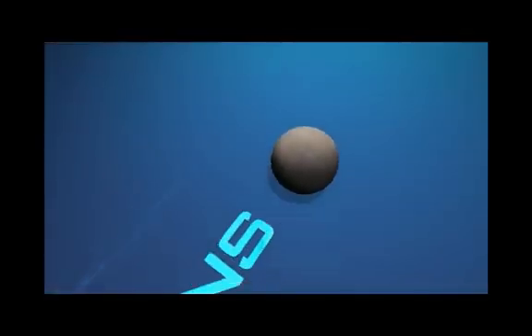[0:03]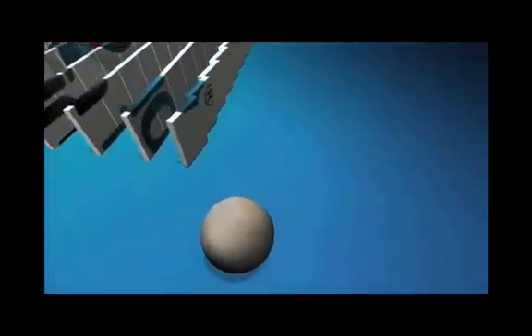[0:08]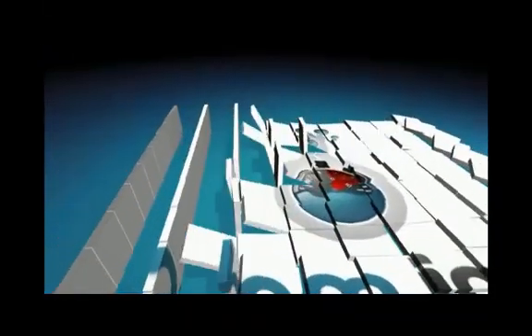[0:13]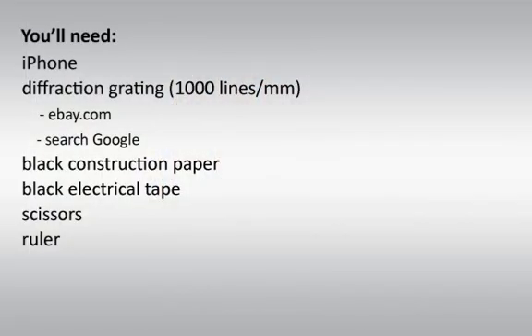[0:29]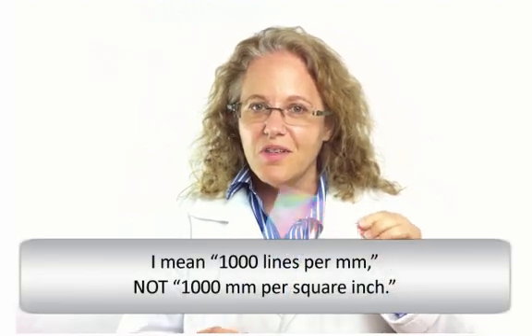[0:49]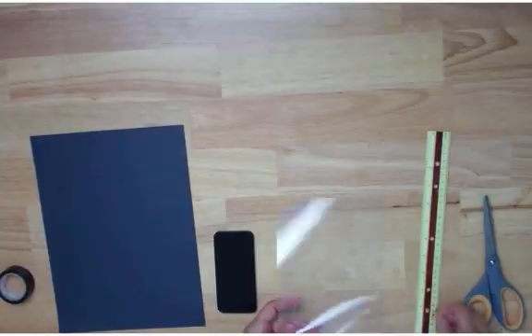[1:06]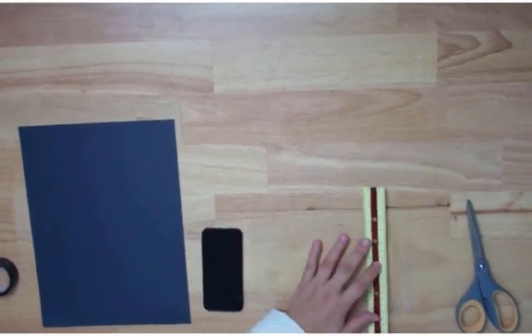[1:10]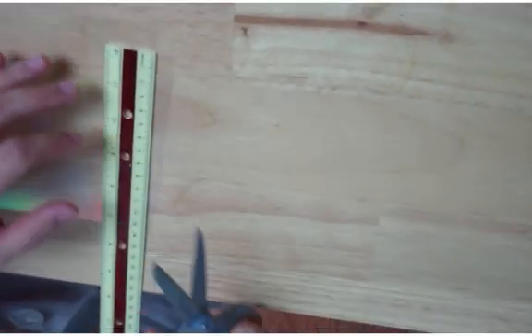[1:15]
You want to first cut out a 1 centimeter by 1 centimeter square of your diffraction grating. I'm going to approximate this. This doesn't have to be exact. What you want to do is be able to cover the lens of your iPhone.
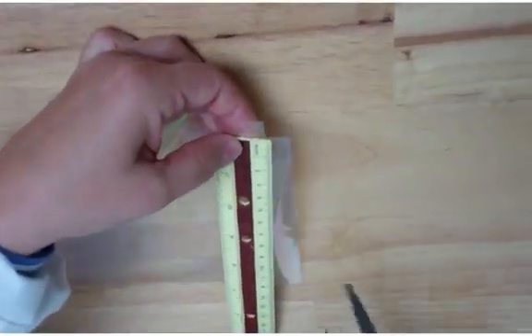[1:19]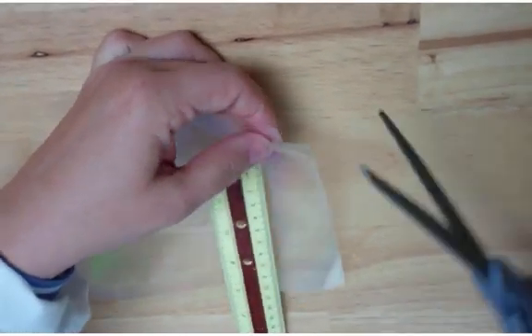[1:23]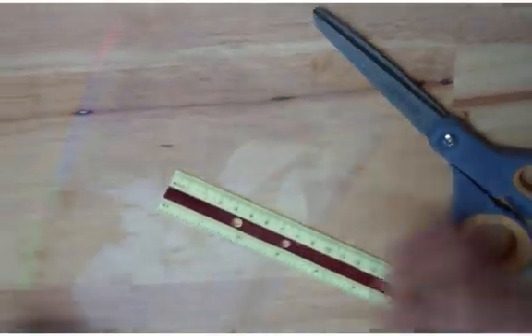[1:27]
Before I forget, what's the purpose of the iPhone is you need to download the app SpectraSnapp, which is going to be able to interpret the light that goes into the iPhone as a spectra.
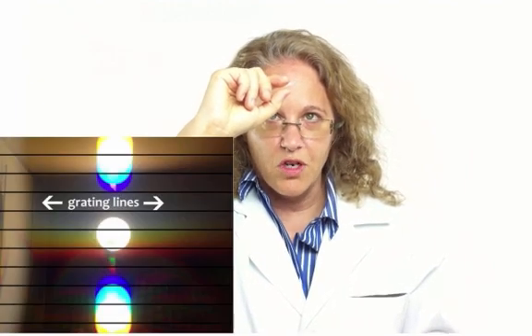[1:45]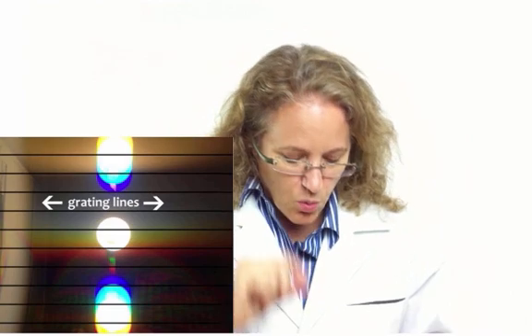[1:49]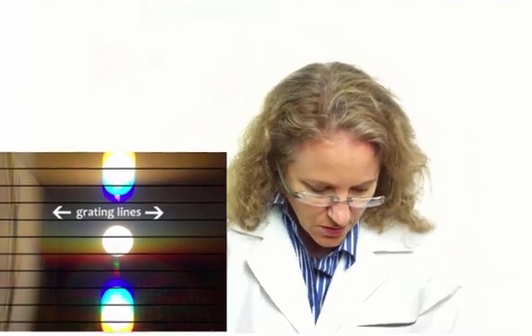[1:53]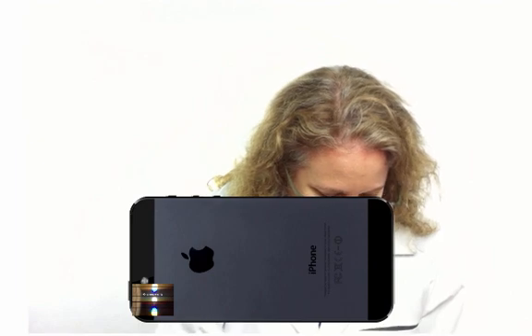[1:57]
So you want to cut out your centimeter, and you want to hold it up to the light and see the direction of the rainbow. The direction of the rainbow is going to be perpendicular to the lines of the diffraction grating. And you want to line up the lines of the diffraction grating with the horizontal part of the phone. So let's do that.
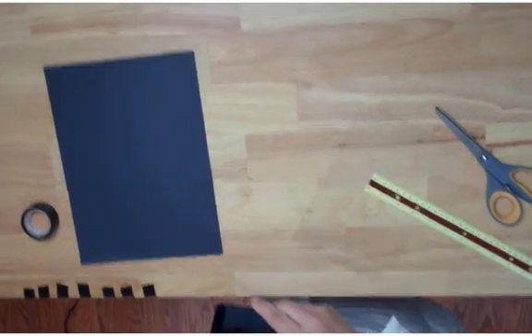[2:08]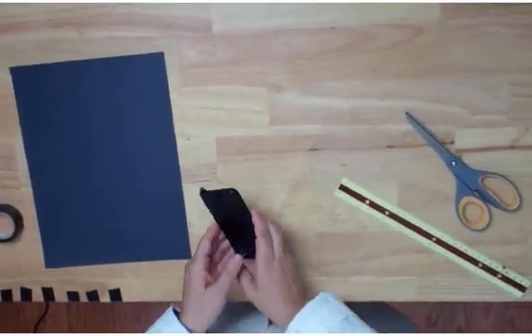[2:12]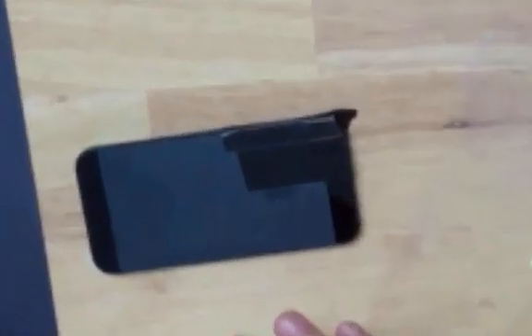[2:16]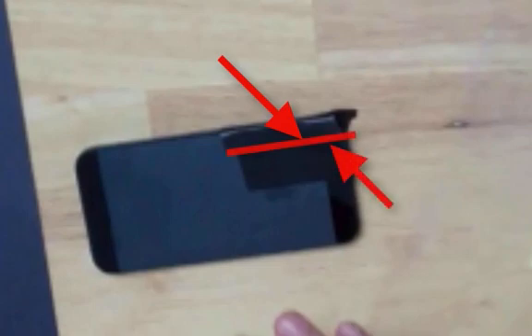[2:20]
And we are going to tape that down with 2 small pieces of black electrical tape so that only a tiny slit appears, because you want to minimize the amount of light coming into it. So here I have a tiny slit in which the light can enter the iPhone.
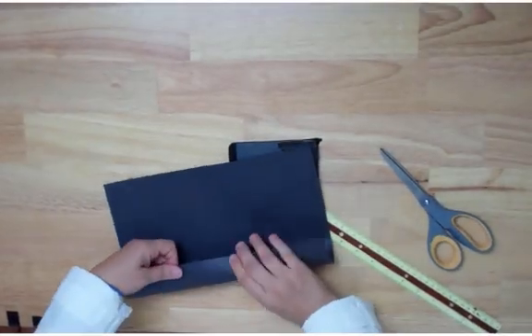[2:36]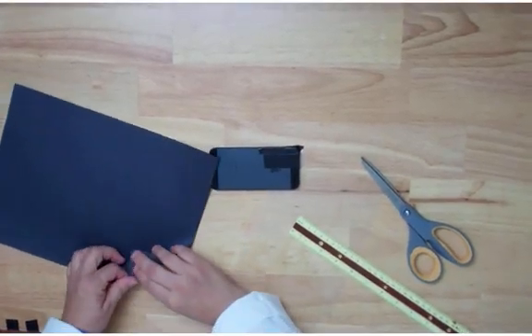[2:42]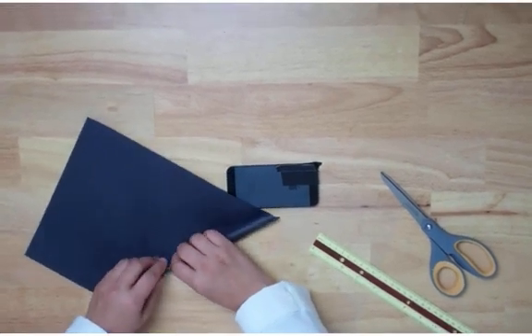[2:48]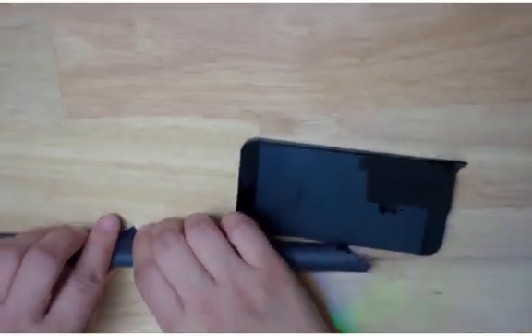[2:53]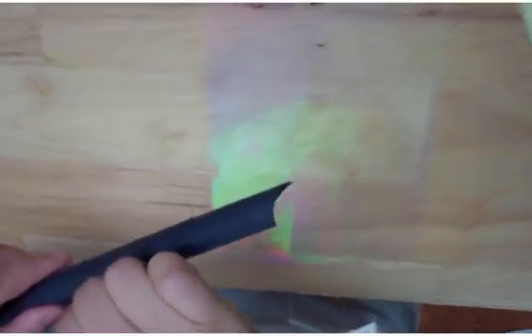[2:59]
Now I need to make a tube to further block out any ambient light. They have directions how to do this on the SpectraSnapp app, but they ask you to roll the construction paper like this, which I found very difficult. So what I do is I take it from the corner and just roll a tube. We roll up the construction paper from one corner, and once it's all rolled up, we're going to tape it down so it doesn't unfurl.
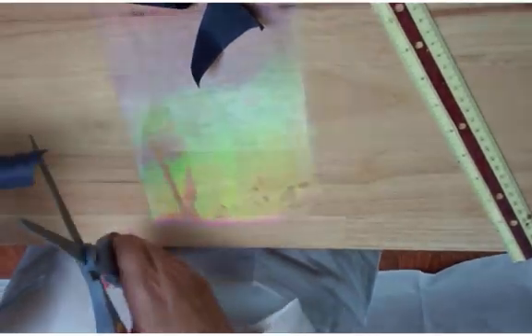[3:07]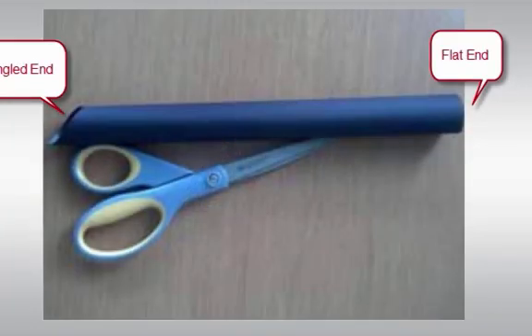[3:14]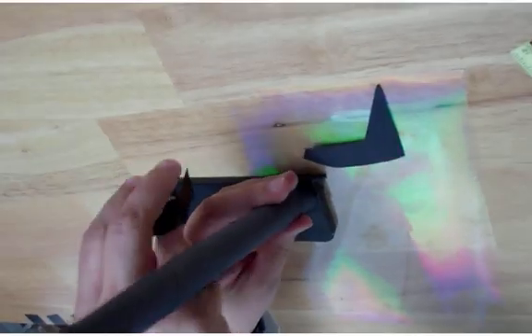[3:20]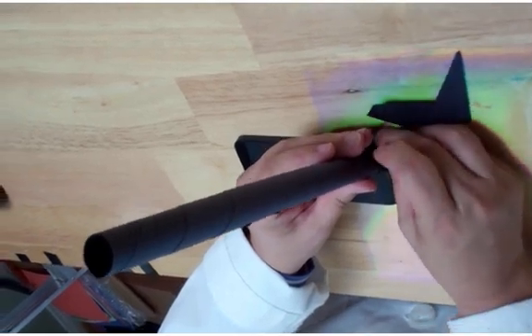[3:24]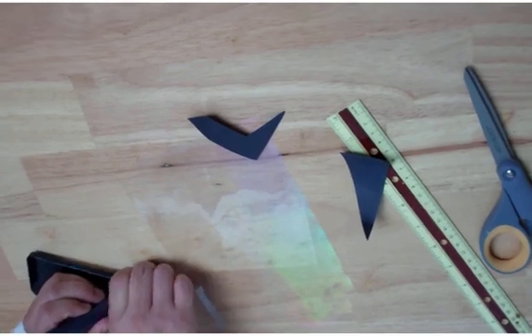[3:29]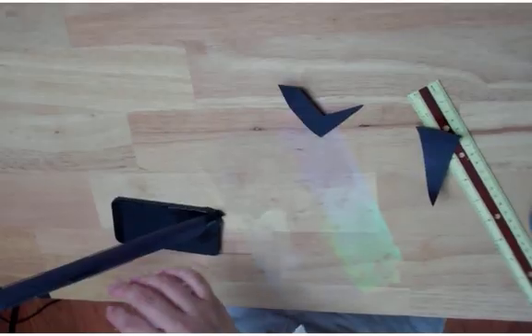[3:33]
Then what I want to do is I want to snip the ends so that they're horizontal. Actually, one end is going to be horizontal, and the other one is going to be more diagonal. The diagonal end is going to attach to the iPhone so that it's sticking up. You want it sticking up like this. And so I'm going to seal that to the iPhone
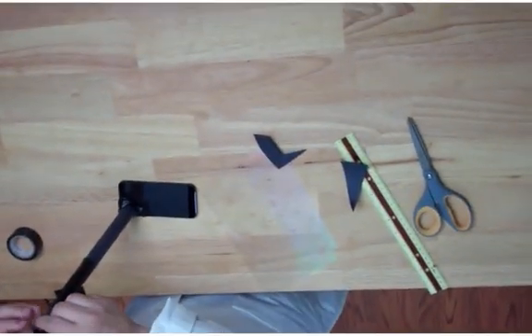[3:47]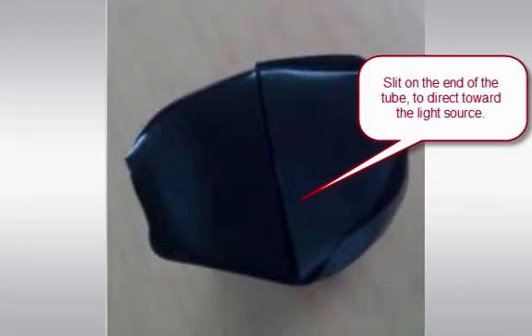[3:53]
so that no ambient light is coming in where it's connected to the iPhone. Now the last step is you also want to mimic that slit you had at the base of the iPhone, at the lens, at the edge of your tube. So we're going to place 2 more pieces of tape at the end of the tube so only a small slit is showing. And now when you hold it up to the light, you can see the source of light and the spectra it produces. So happy filming.
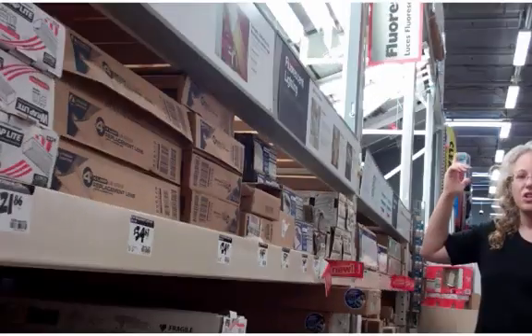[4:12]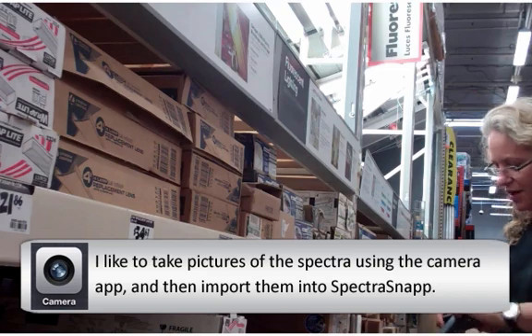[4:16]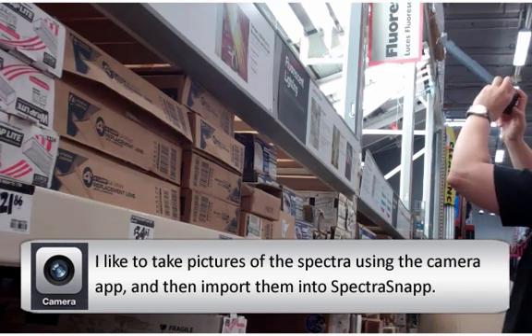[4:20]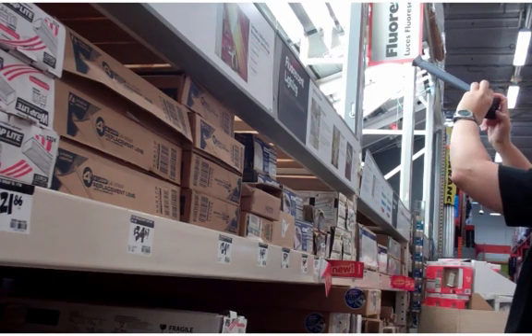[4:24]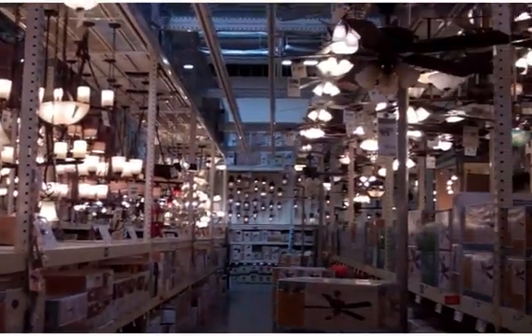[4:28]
Next step, we're going to take this and look at various different types of lights. I say, let's go to Home Depot. So here I am at the fluorescent light section of Home Depot. I'm gonna make sure I found the camera app on my iPhone. I also wanna make sure that the flash is turned off because it's gonna overexpose the picture if the flash is on. How about this section for lights?
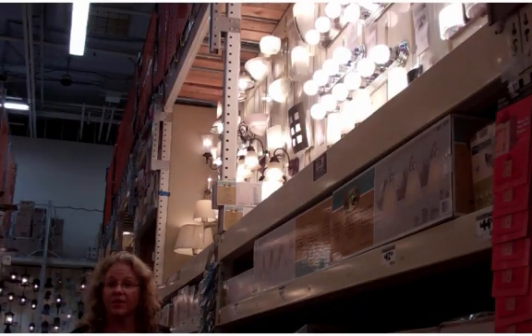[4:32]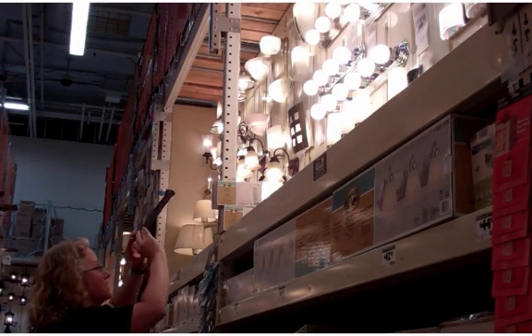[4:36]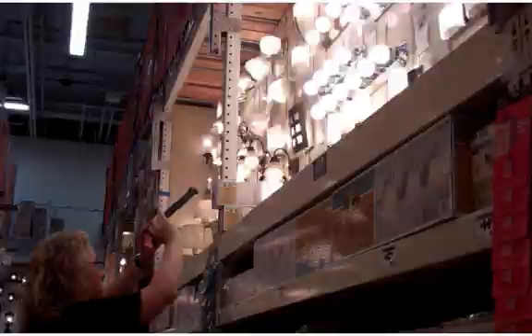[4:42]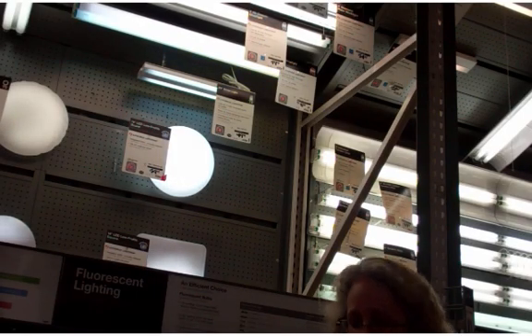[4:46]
I believe these are standard incandescent white light bulbs. Let me take a picture of these. Look for the spectrum in my phone. Here we have LED lights, so let's take a spectrograph of these.
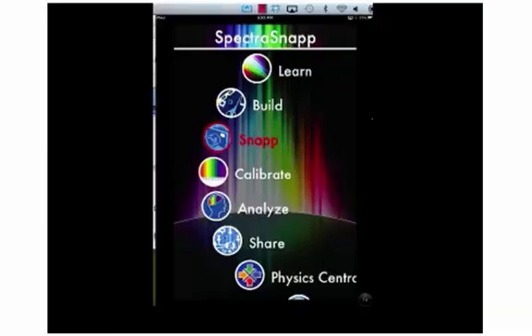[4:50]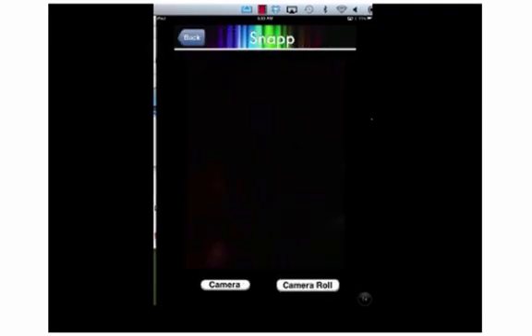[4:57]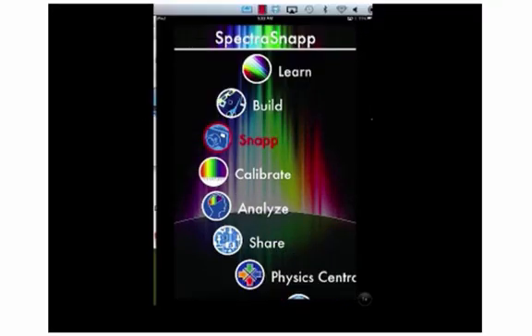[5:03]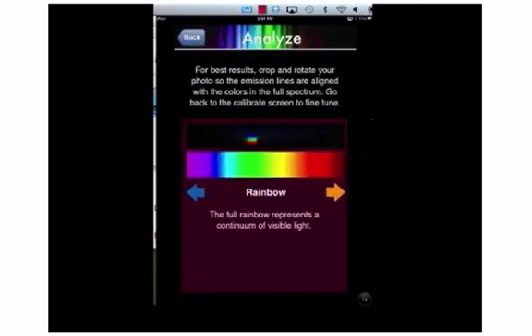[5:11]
Once you've taken your pictures, open up the SpectraSnapp app and select Snap. Once inside Snap, select Camera Roll, and then you can select one of the pictures you've taken. Then go into calibrate, but you really don't know which way to move this picture. So let's get out of calibration and go to analyze.
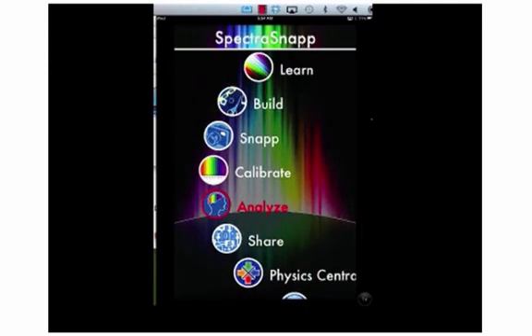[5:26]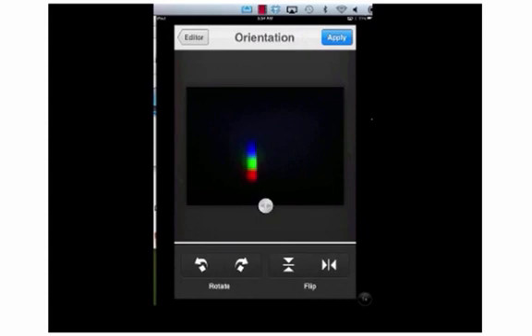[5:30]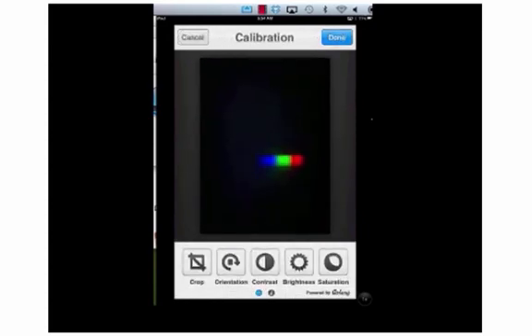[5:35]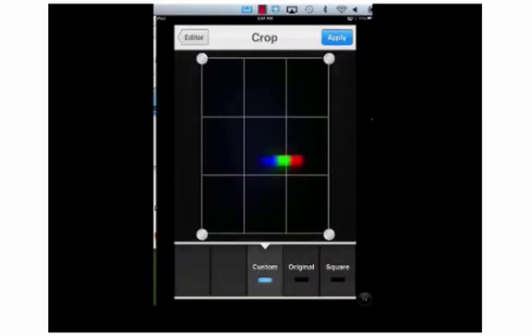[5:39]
Analyze shows us the rainbow from the violet end to the red end. So we know that we want the blue-violet end to be on the left and the red end to be on the right. So now we'll go back to calibrate and we'll align our picture so that the blue end is on the left and the red end is on the right. So we rotated it, and now we also want to crop it so that only our image is visible.
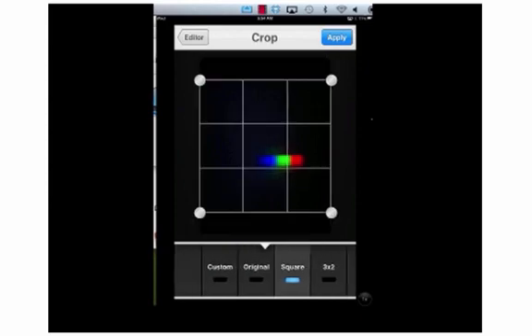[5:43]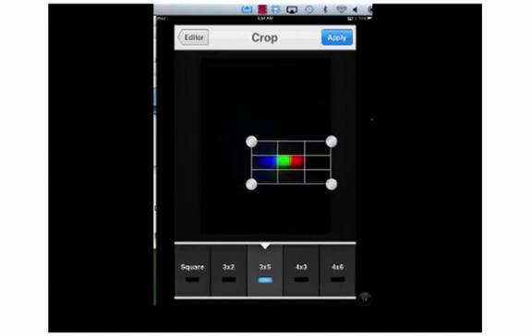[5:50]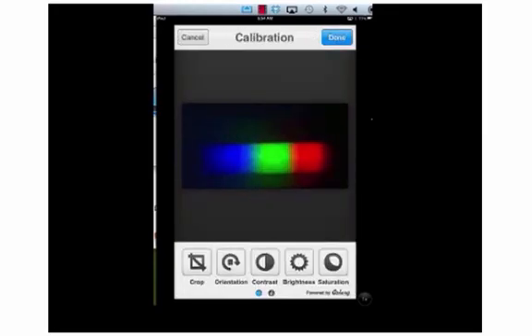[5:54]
So we're going to bring this a little bit closer into the picture. We're going to drag the corners. Actually, I'm going to select the rectangle, the horizontal rectangle, because that's really what this shape is. And I'm going to bring in the corners as close to the picture as I can. And now I have my calibrated picture. Now I can go back to analyze.
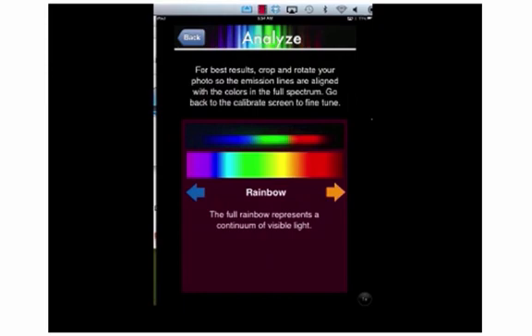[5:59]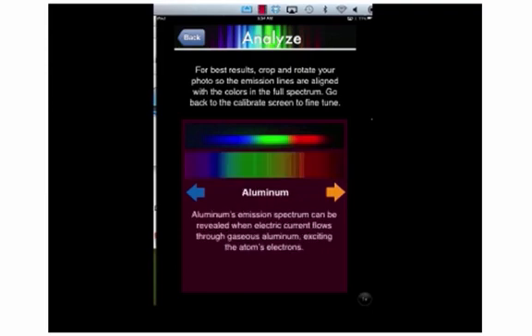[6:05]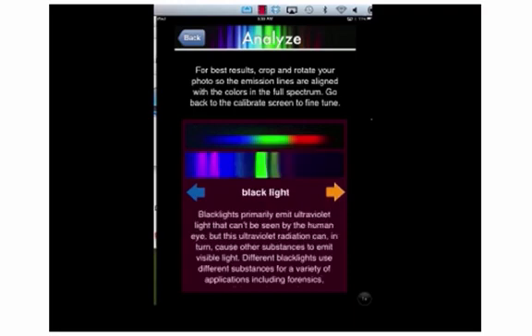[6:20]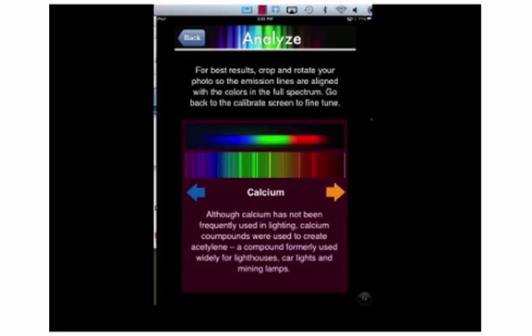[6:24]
And as you can see, on the top is the picture from my camera roll, and on the bottom is a rainbow. And it looks like what I have here is white light because it's a continuous spectrum. But as I go through the selections here, this is aluminum, and you compare the lines of the spectra of the different metals with my light source, you can see that aluminum has spectral lines, whereas our source of light is a continuous spectrum. Look at black light, look at calcium.
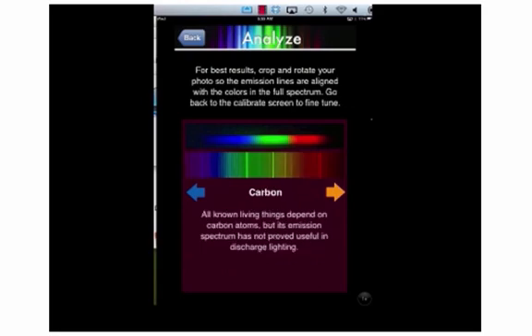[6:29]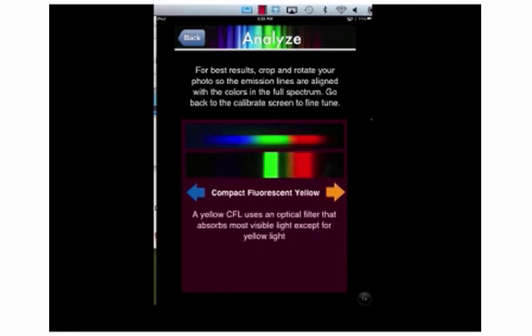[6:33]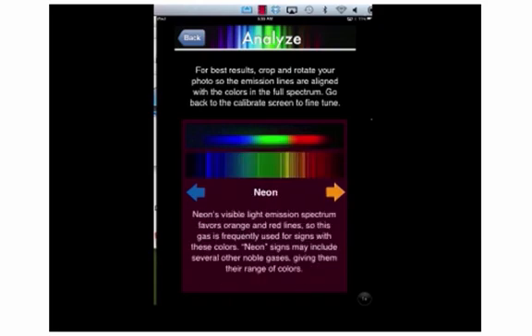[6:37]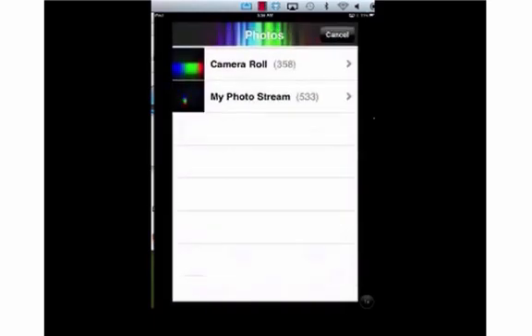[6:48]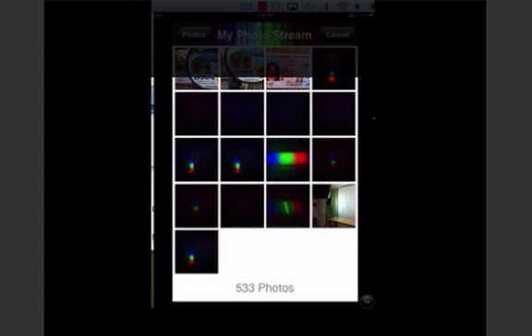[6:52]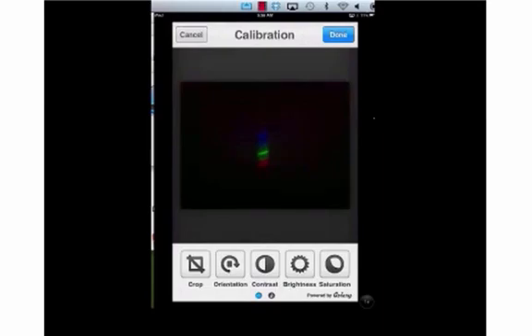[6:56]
Notice the bands. Remember, the bands represent the certain energy amounts that are given off when an electron moves from a higher energy level to a lower energy level. So we can compare our light source, our picture, with all these samples down below in the analyze section. Next, we can take another picture from our camera roll. Let's select a picture from our fluorescent light.
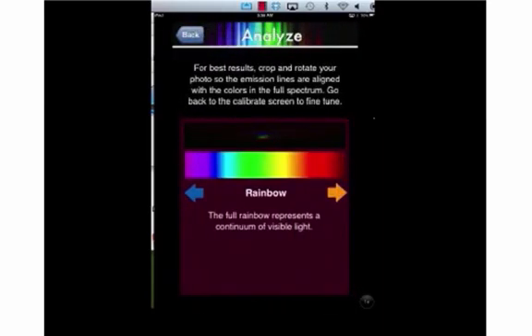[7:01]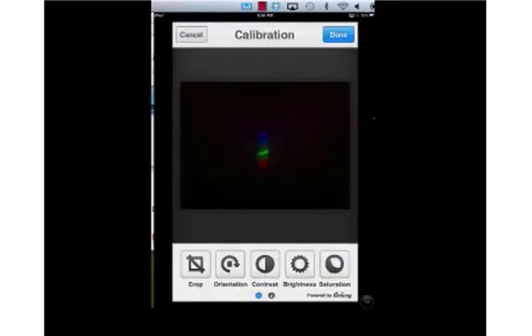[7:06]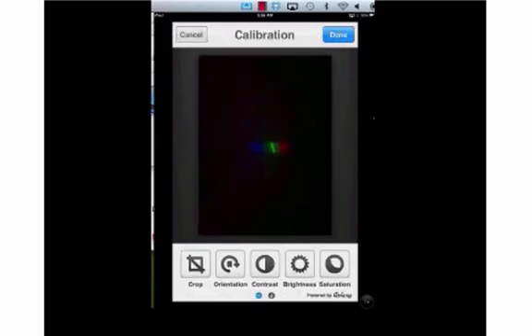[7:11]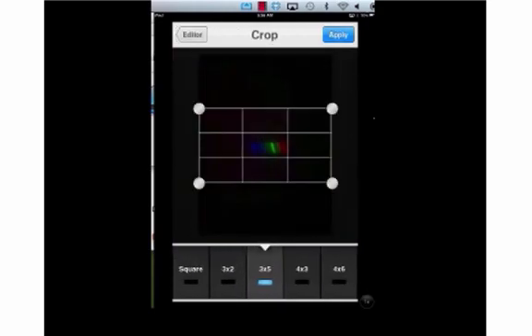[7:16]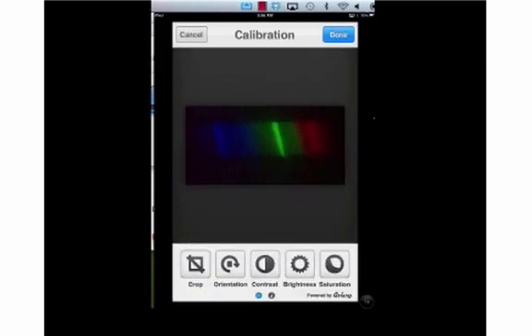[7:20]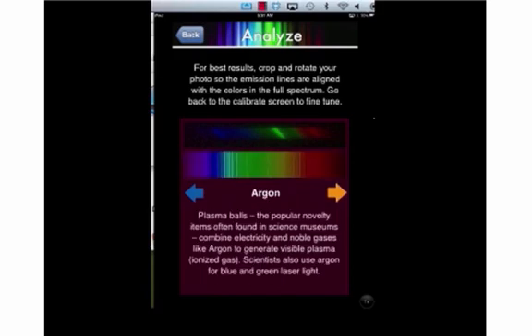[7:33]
And again, remember in the analyze section, we have the violet on the left end, and the red on the right end. So let's go back to calibrate, and we're going to need to turn it to the left so that the blue is on the left and the red is on the right. We're going to crop it, but we're going to select the shape that matches our spectra. So we're going to select a rectangle shape and crop it. And now we can compare our light source, and you can see this is no longer continuous white light. We have specific bands at the blue line, the green line, yellow, and red.
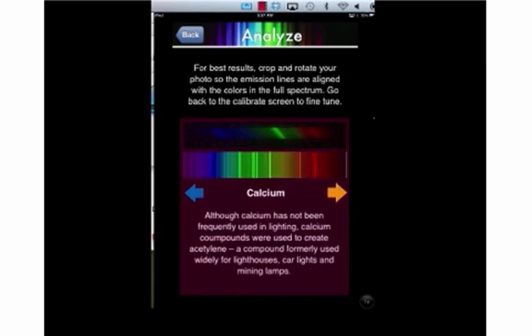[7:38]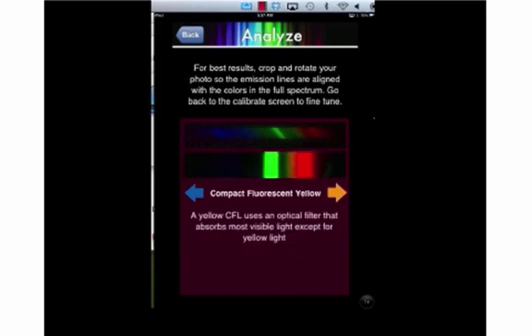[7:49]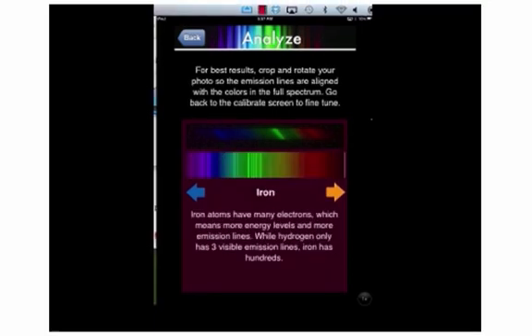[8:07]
Leafing through our samples, we see that our fluorescent light looks just like compact fluorescent white. Notice the blue lines, the green lines, the yellow, and the red. It's definitely compact fluorescent white, and it says here in the description that compact fluorescent white is made of mercury gas and various phosphors. So that's what we have here. So we used the SpectraSnapp app and the samples that they gave us to see what was in our light, which of course must have been mercury vapors and phosphors. And here, look how much it lines up with mercury.
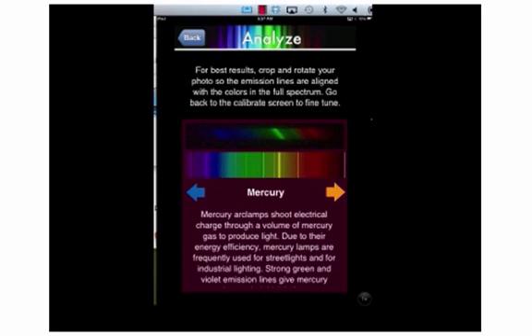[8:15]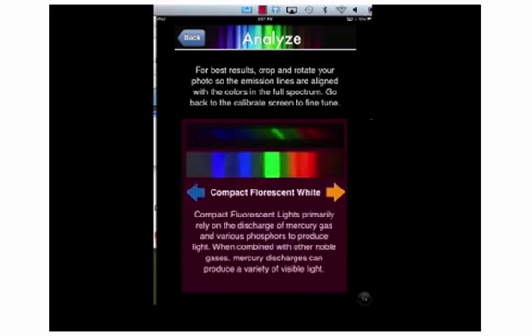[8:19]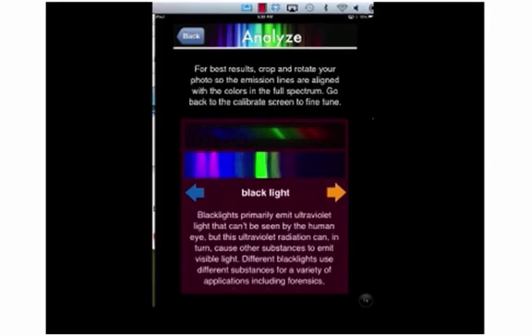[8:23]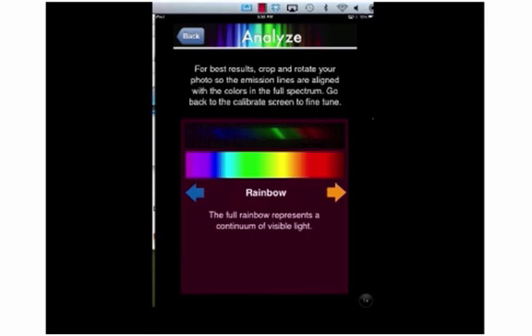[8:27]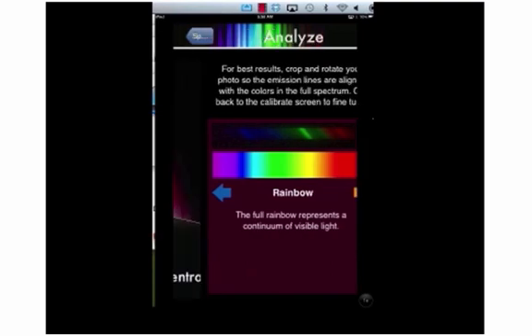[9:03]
Notice the difference between this fluorescent light and a continuous source of white light, the rainbow. Notice the bands of light. Remember, these are due to electrons relaxing from higher energy states to lower energy states and giving off that energy in the form of visible light. Each band of light has a different frequency, a different wavelength corresponding to the amount of energy given off between those energy levels. So go ahead and use this app, have fun with it, and check out various types of lights. Find neon lights, find fluorescent lights, find white lights, find all different types of colored lights, and see the spectra through the SpectraSnapp app.